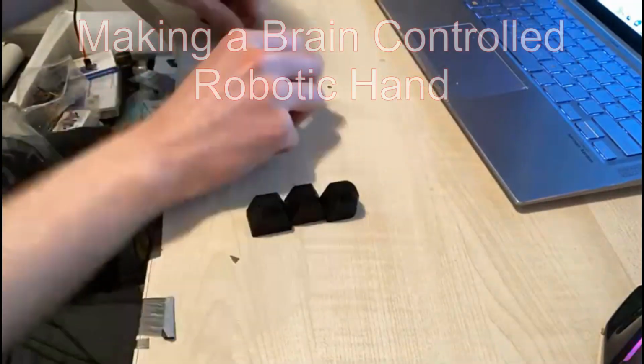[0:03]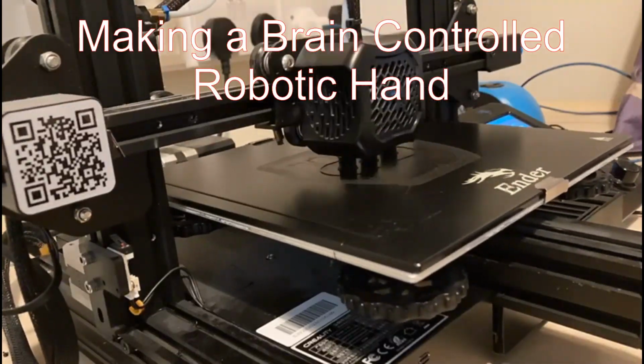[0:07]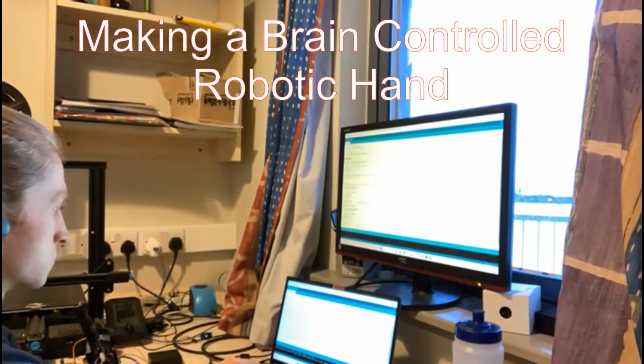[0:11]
I have a hand. Actually, I have two hands. And if you are like me, then you probably also have two hands. Thing is, there's people who don't have two hands, and some people want to replace their hands because they have fingernails that look like these.
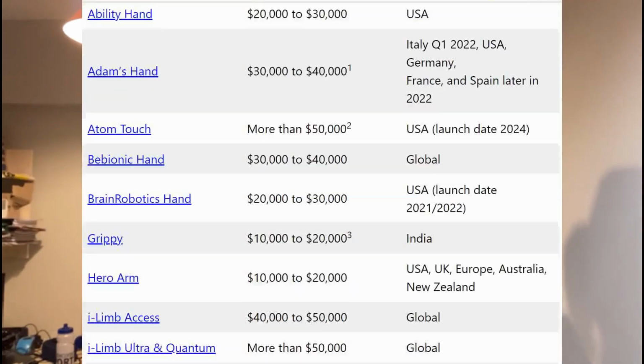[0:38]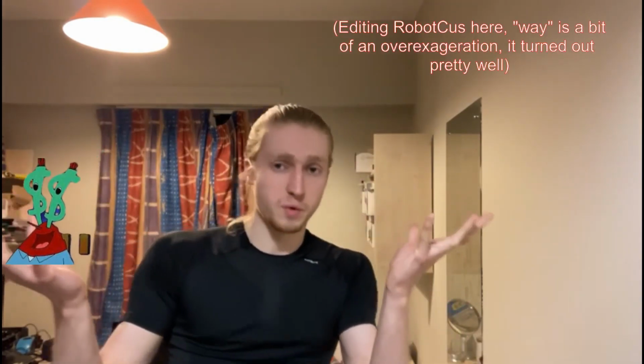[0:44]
Thing is, you better be Bill Gates if you want an active prosthetic, because these things are expensive. I think I can make one that is way cheaper, but also way worse.
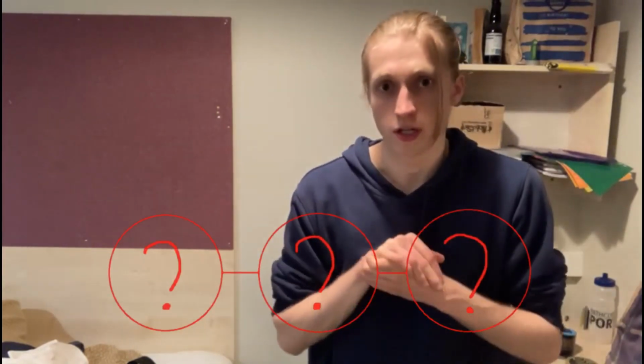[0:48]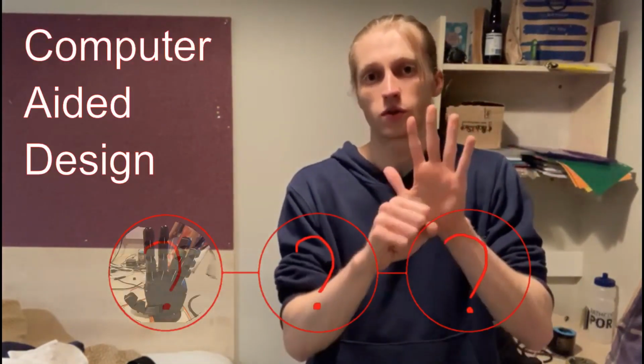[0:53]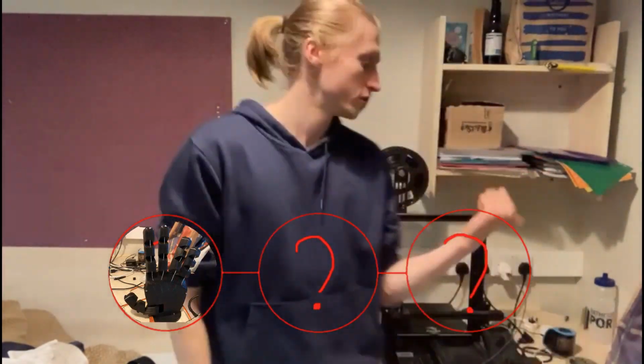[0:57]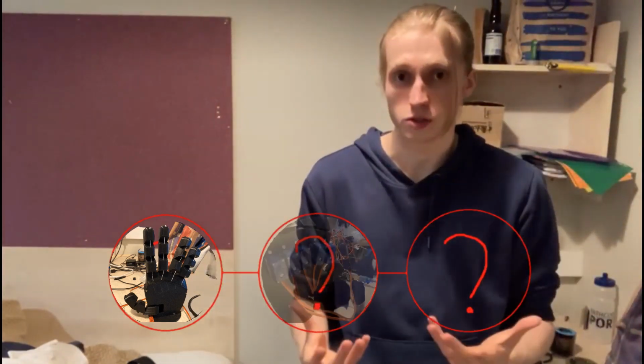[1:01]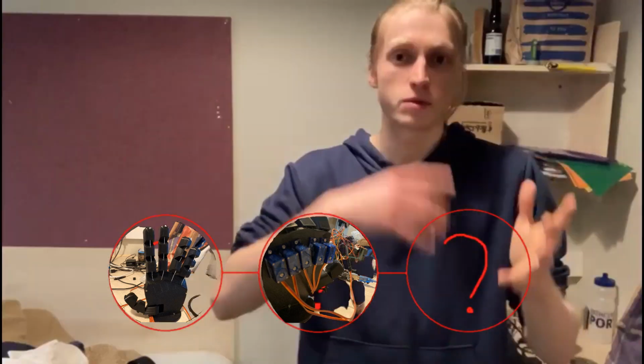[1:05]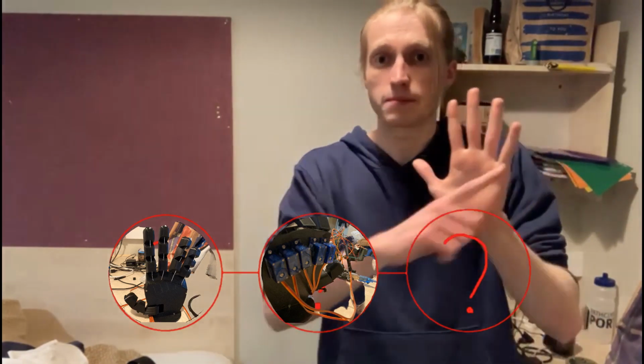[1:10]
Here's my plan. There's three main components that are going to go into making this hand. The first of which is the computer-aided design, or the CAD of the hand. That will be creating the actual body of the hand, and I'm going to use 3D printing to do that. The second bit is the motor and control system. I'm going to control the movement of the fingers and the thumb using some sort of motor that's going to sit hopefully in the palm. That might be a little bit tight for space, but we'll see what comes out of the design.
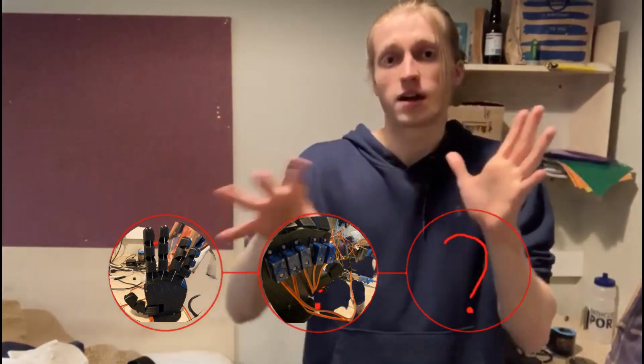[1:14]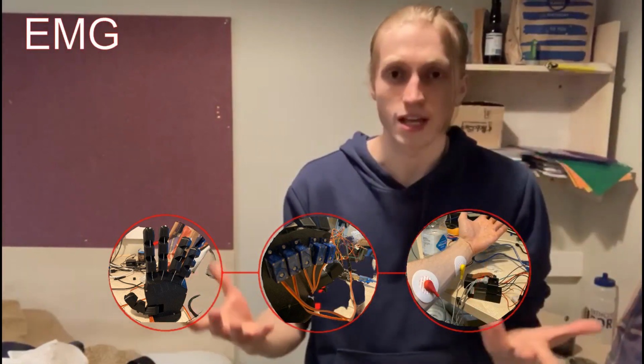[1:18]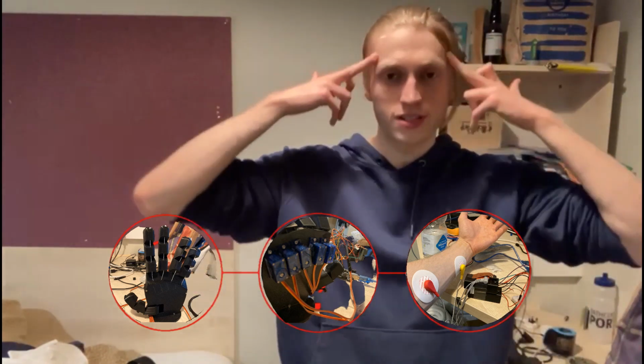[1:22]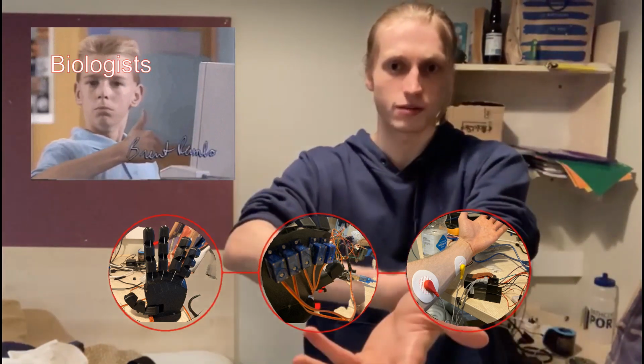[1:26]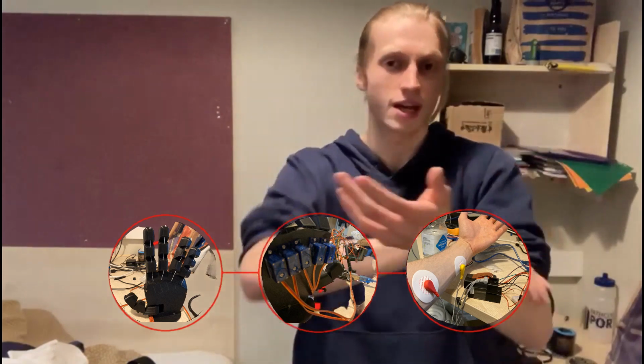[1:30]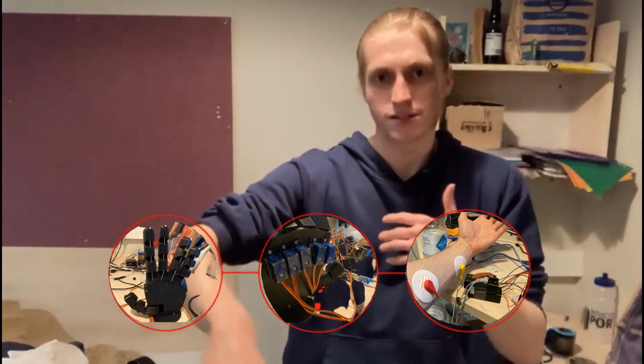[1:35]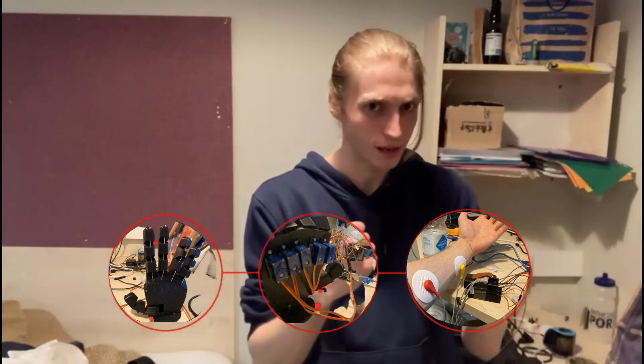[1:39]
And then finally, I'm going to create an electromyography sensor, or EMG sensor for short. Essentially, the brain is going to send electrical pulses down into your muscles, and on the surface of the skin, I'm going to detect a potential difference. Then I'm going to amplify that signal, and that way I can characterize what action the person is trying to make and make the hand do the same thing.
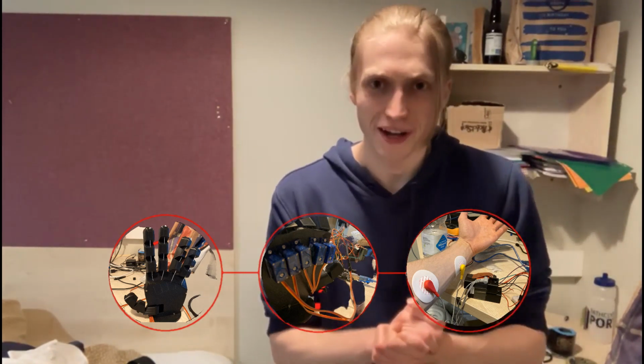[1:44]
I've given myself a month for that. Yeah, I'll try.
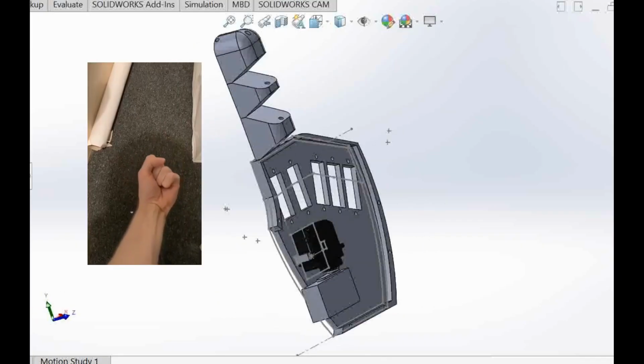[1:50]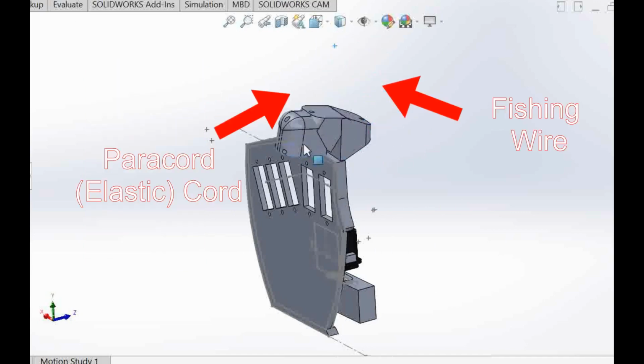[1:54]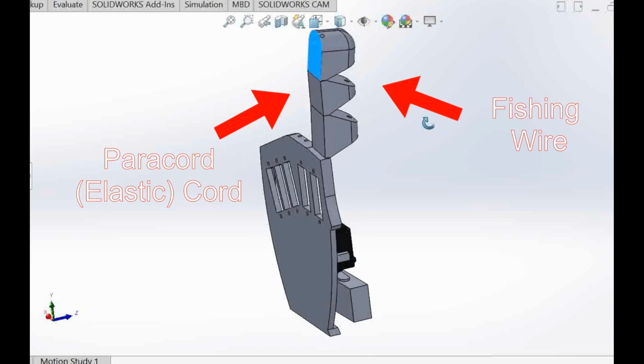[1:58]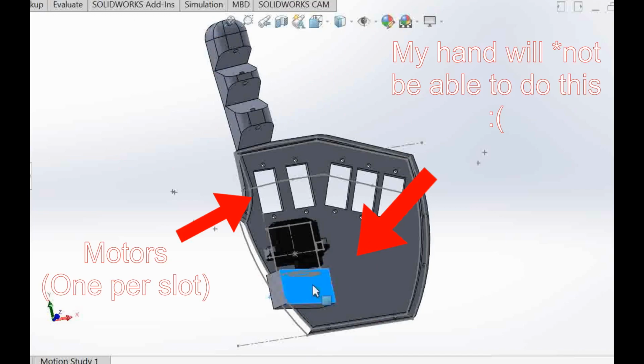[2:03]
In a real hand, muscles pull tendons. To replicate this, I will use fishing wire and elastic cord that runs along these parts of the fingers. Motors will sit in this part of the hand. Each finger will have a respective motor.
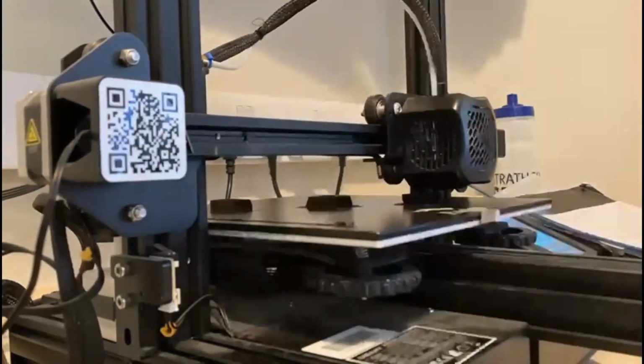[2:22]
So with the design in a pretty good place now, I just want to quickly test if my whole idea with the power cord and pulling the actual fishing wire with the finger is going to work. So I'm going to print off the thumb, as you can probably hear my 3D printer is on, and yeah, let's go, good luck. I don't think you have any idea how fast I really am.
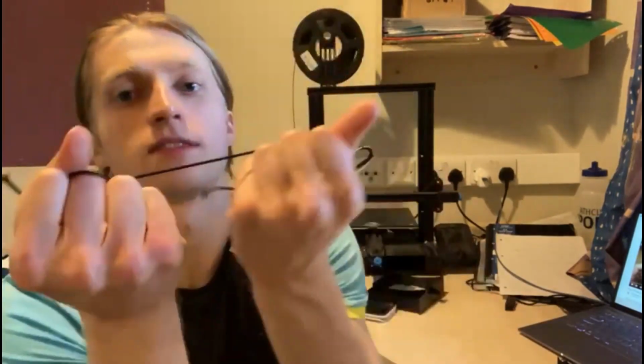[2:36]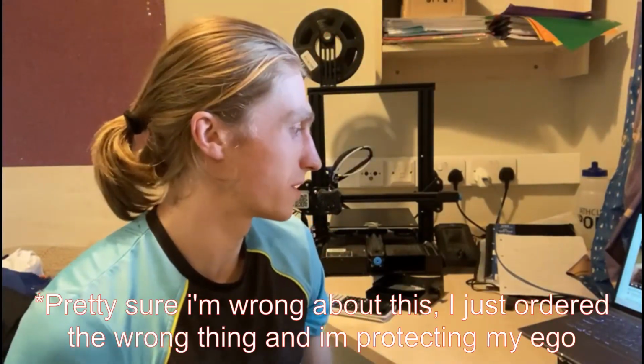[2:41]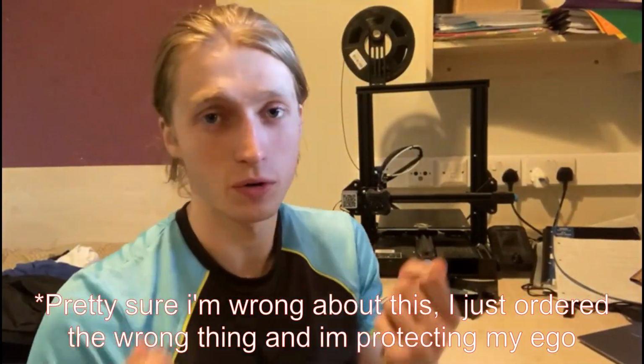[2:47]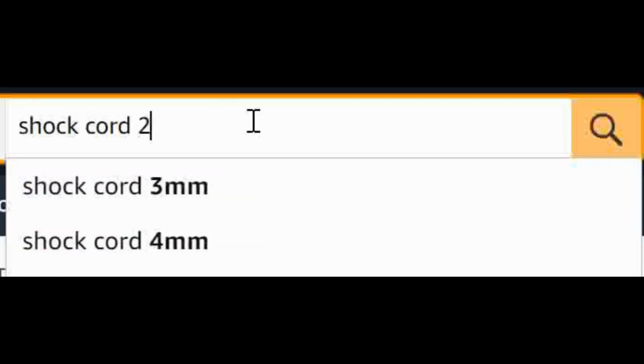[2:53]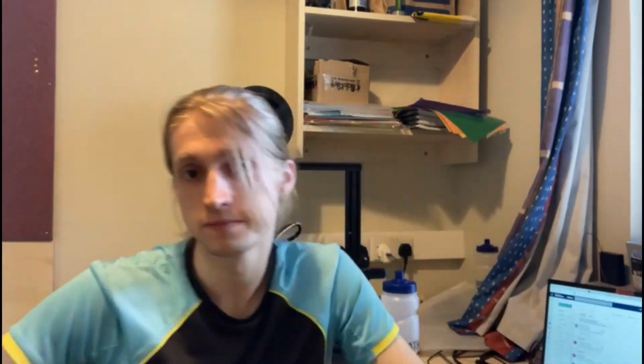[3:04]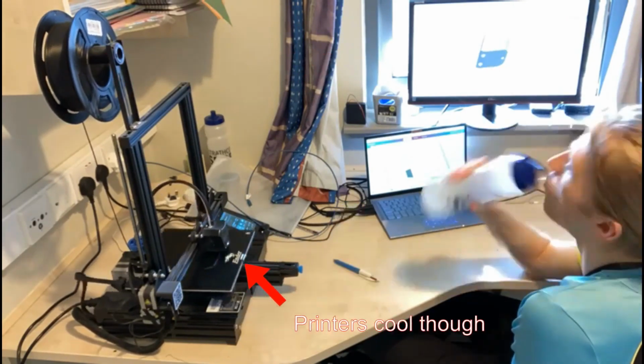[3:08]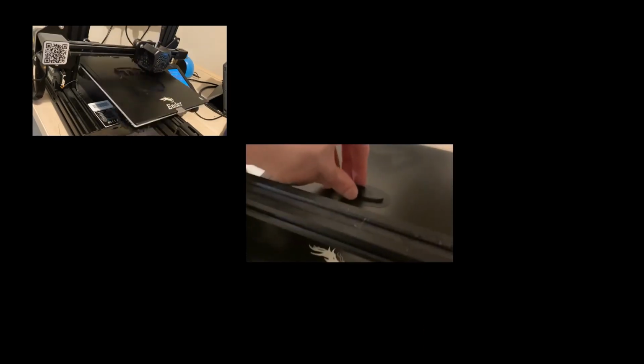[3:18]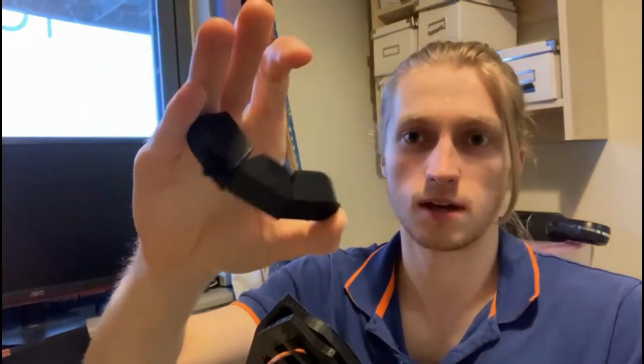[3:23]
So with those 3D prints done, the fingers are looking really good. I'm getting that snapback from the shock cord, which is what I was looking for. But the palm's going to need a slight reprint.
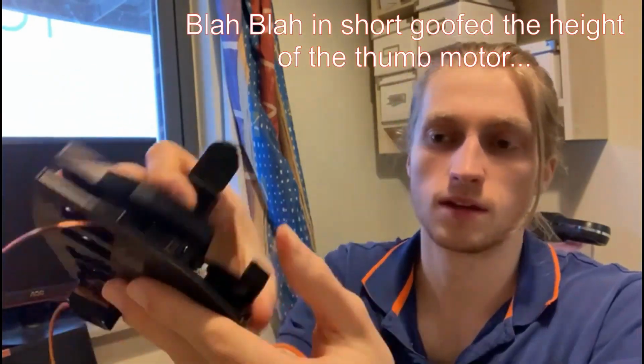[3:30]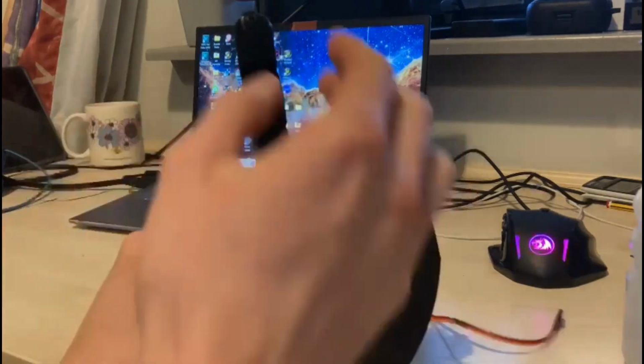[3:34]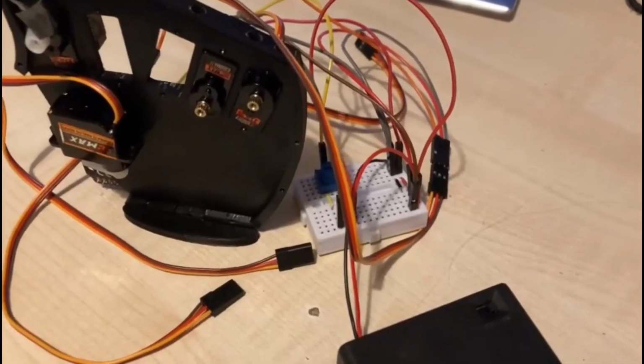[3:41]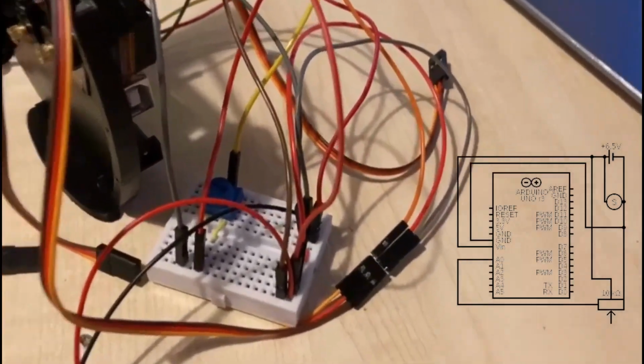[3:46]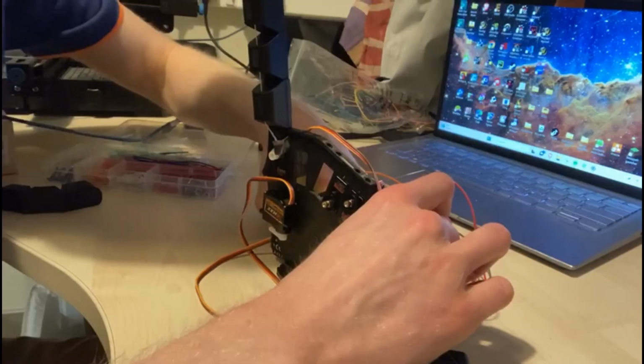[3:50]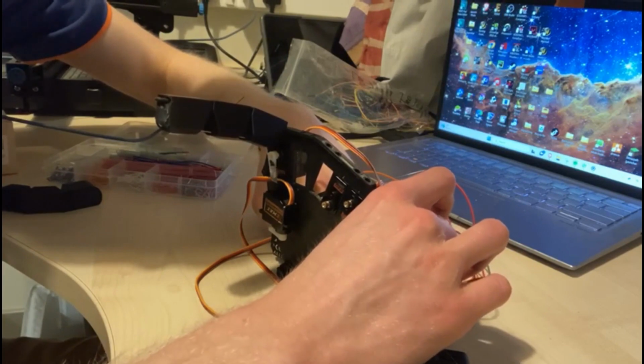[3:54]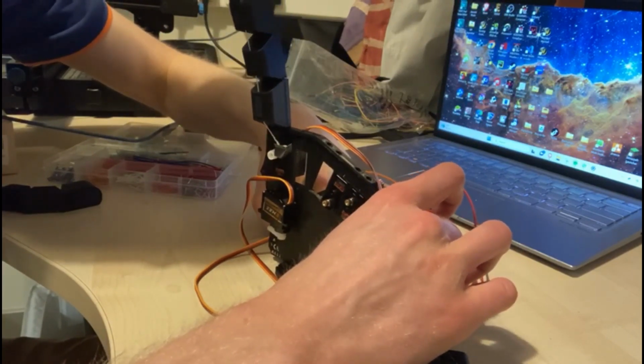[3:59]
With the CAD of the hand in a good place, I can start with the circuit work. I've started off by making this potentiometer circuit, which allows me to move the servo motors as I please. The servos I'm using are these 180 degree rotation ones, which I wrongly assumed would give me enough range of motion for the fingers. So I'm going to have to source some continuous rotation servo motors and revisit the CAD of the hand a little bit.
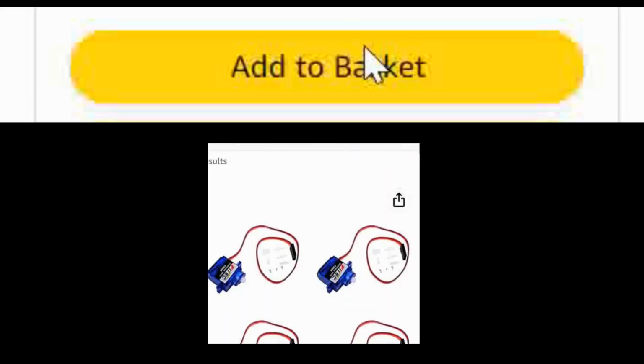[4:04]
Leave me alone! The use of continuous rotation servos highlights the issue of object detection.
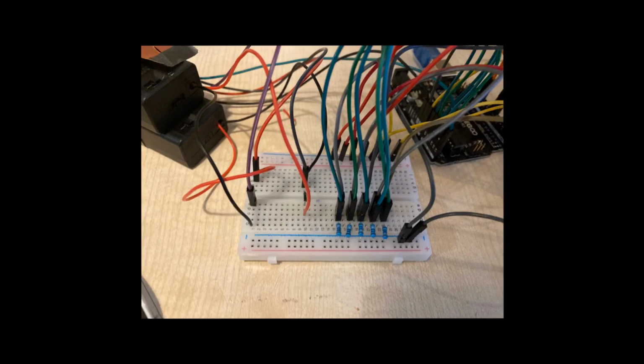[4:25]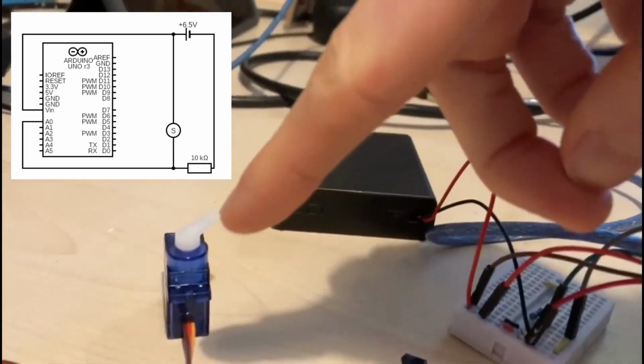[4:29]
How does my hand know the difference between these two objects? One has a larger circumference, so subsequently the way that the hand grips it is going to be different. I'm going to solve that issue of object detection using circuitry, this circuit. By using a shunt resistor, I can measure the current that goes across this servo here.
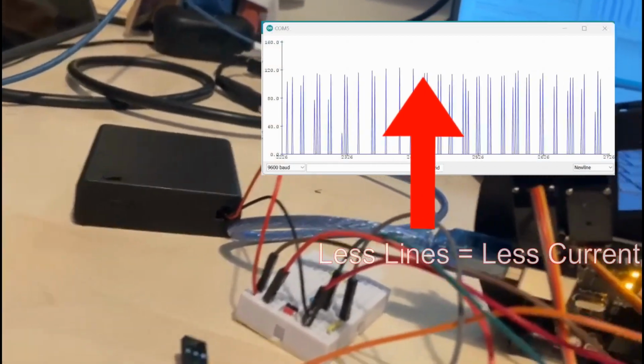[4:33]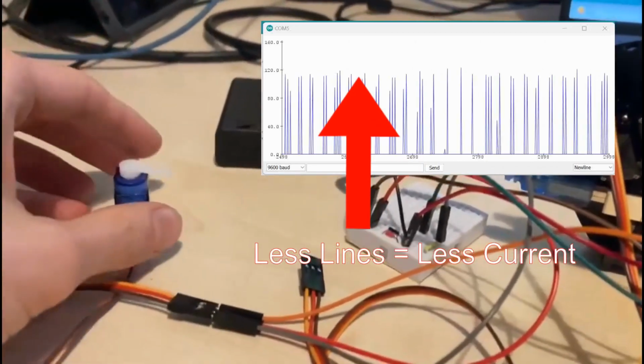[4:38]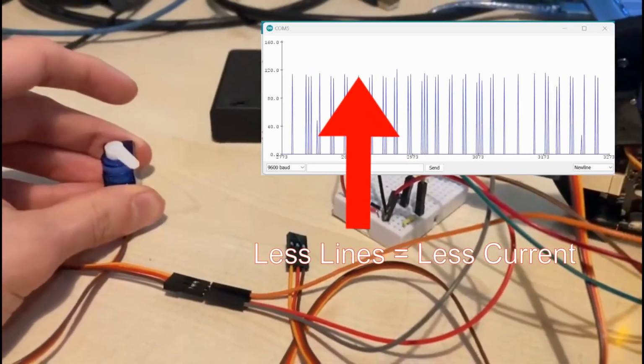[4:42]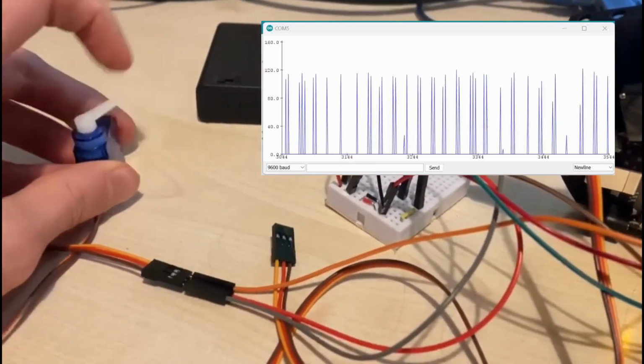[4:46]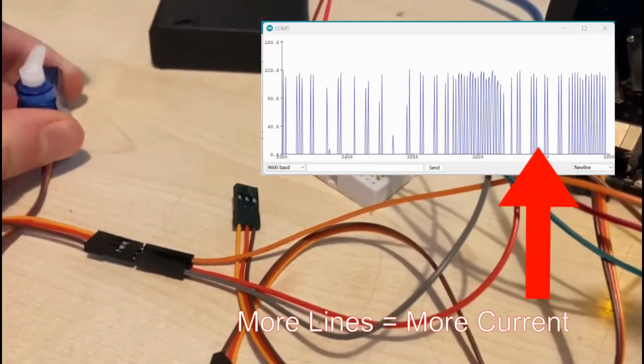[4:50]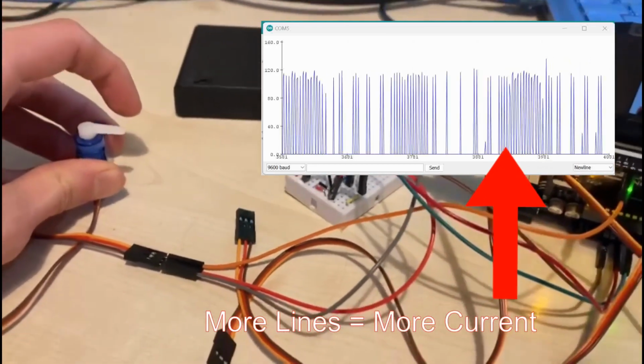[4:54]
So what you can see is there's this generic sort of behavior when the servo is unloaded, and when the servo starts to experience resistance, i.e. when the fingers would be either fully closed or fully open, you'll start to see a change in the characteristics of that line. What I can do is I can pick that up in software and actually filter that out.
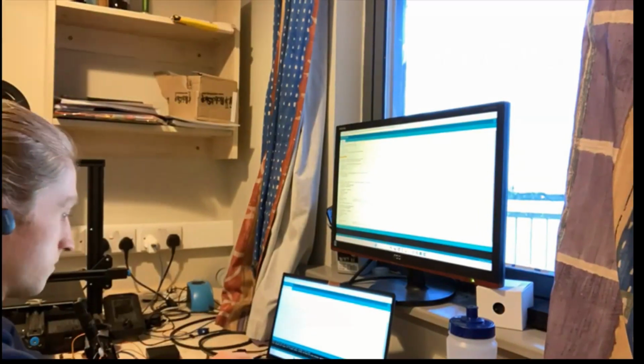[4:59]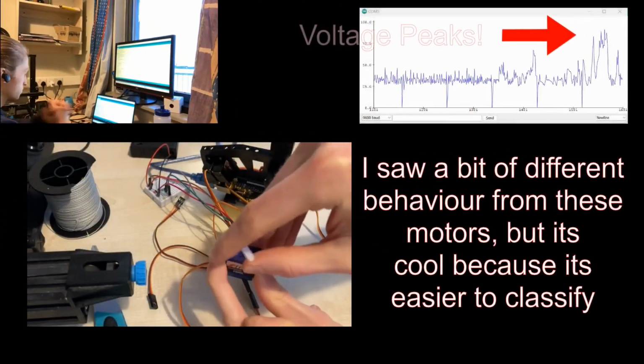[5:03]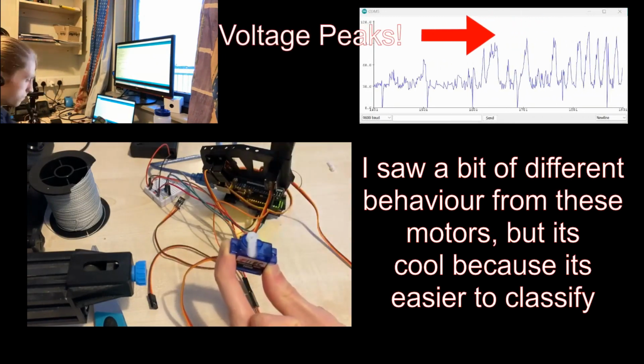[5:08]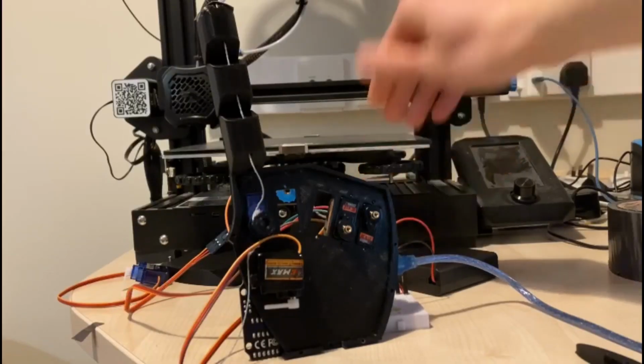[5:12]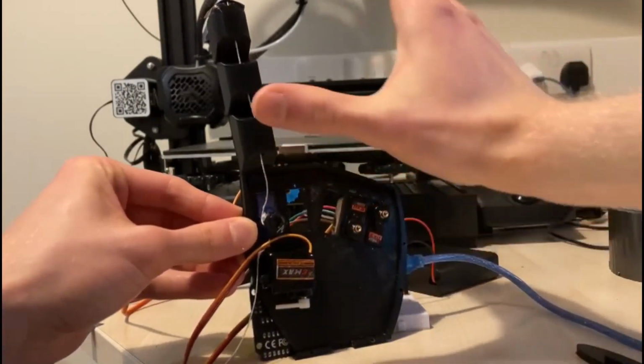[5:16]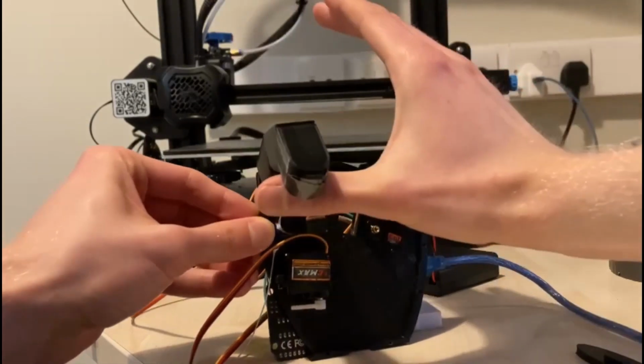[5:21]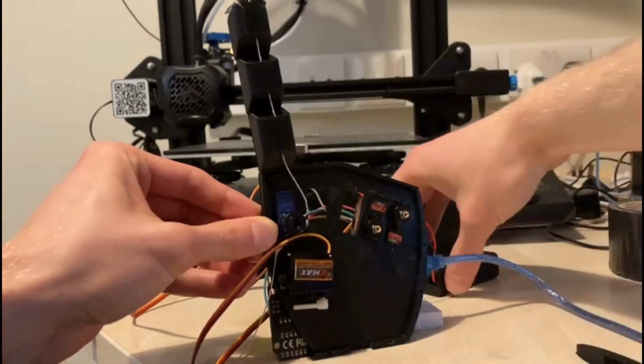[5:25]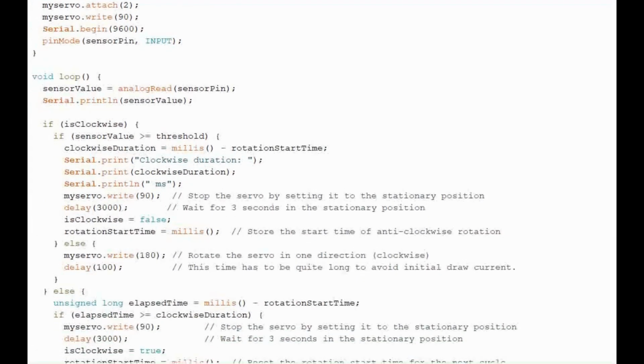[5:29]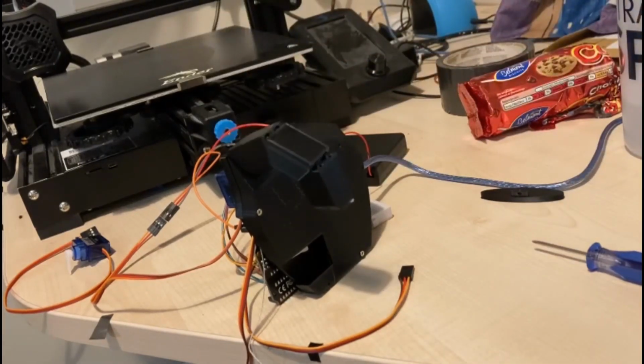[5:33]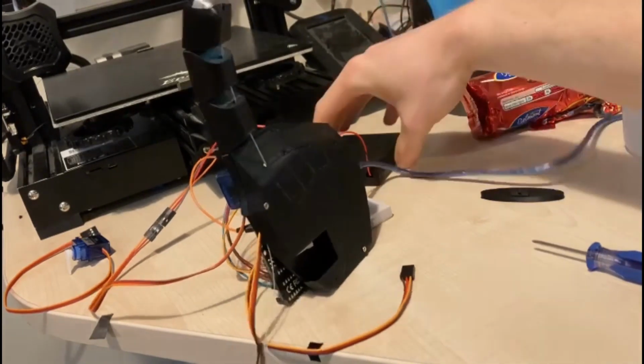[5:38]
Through much CAD, coding and sweat, I've managed to get the motors working as they need to be. Since every object that is gripped is different, the time for which the servos have to rotate has to be different for each finger. I had to somehow keep track of the time of rotation as opposed to the position of the rotation, which was not fun, to say the least. The good thing is, this can now be scaled up to the whole design, so cue the montage.
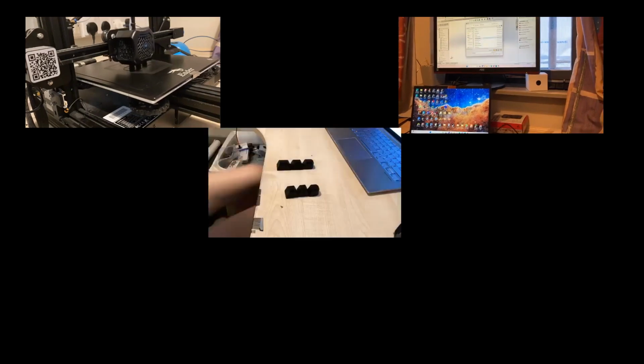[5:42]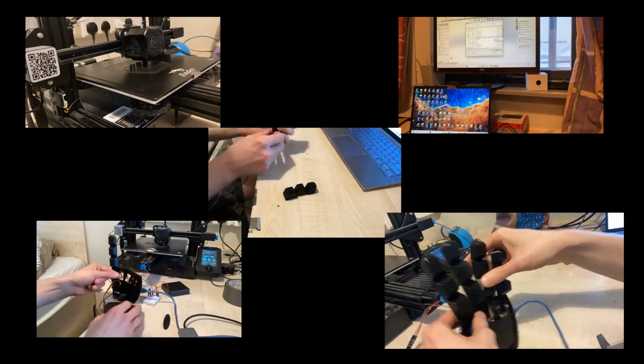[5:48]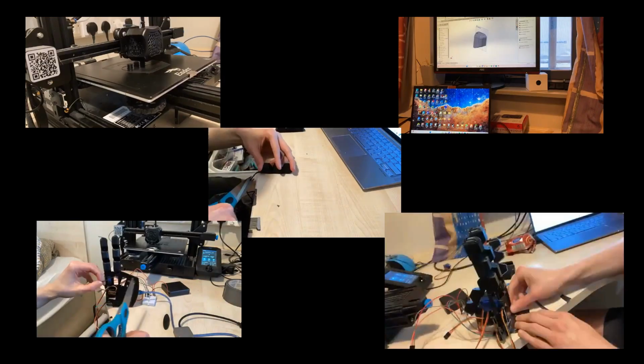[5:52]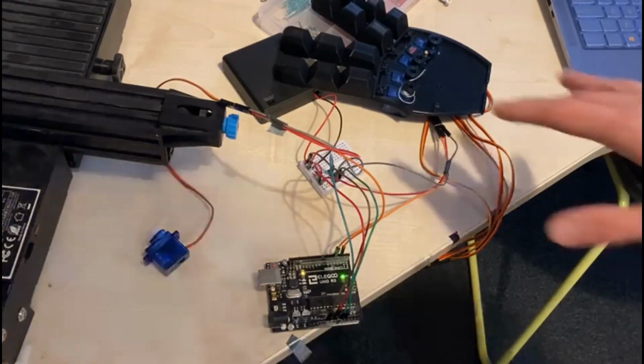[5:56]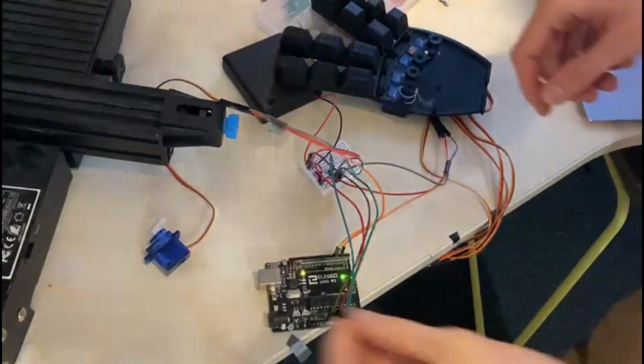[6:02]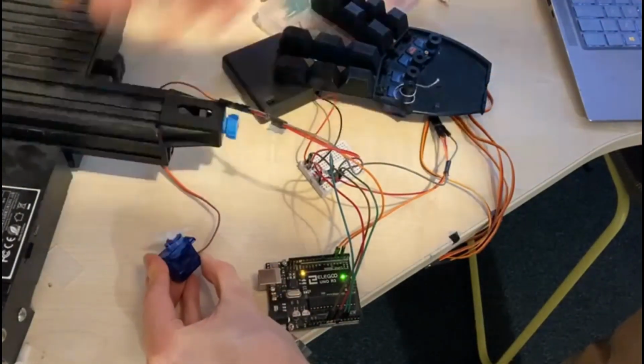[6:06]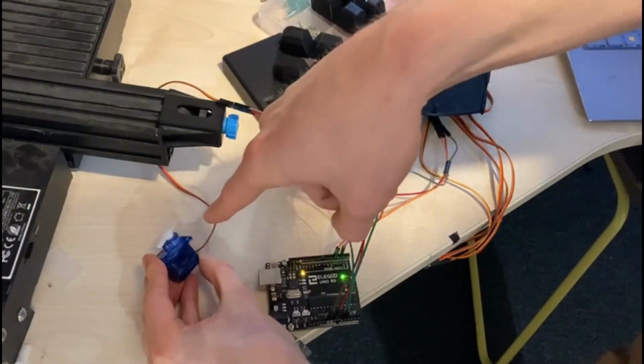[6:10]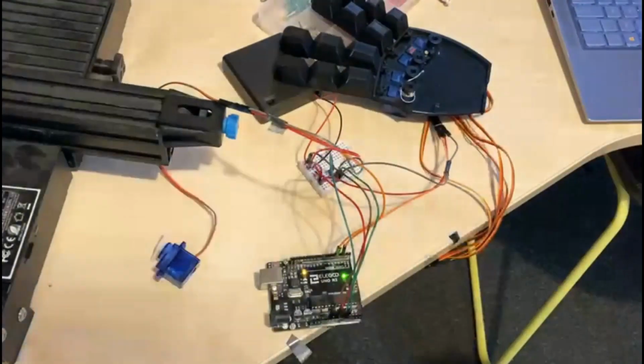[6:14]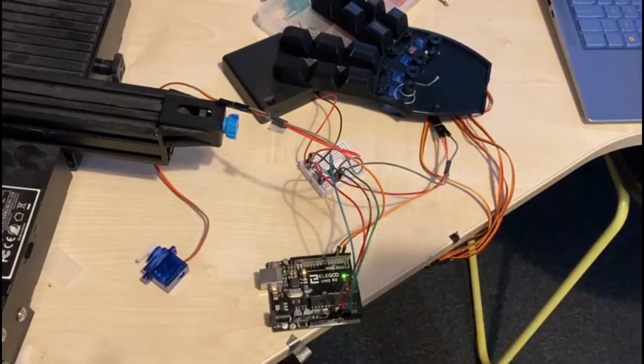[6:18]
So I'm making steady progress with the scaling up of the system. I've managed to get the code working so that each motor acts independently of the other. So if you see, if I go and I stop this one, if you imagine it's like controlling a finger, this one is still doing its own thing, and this thing does its own thing as well. So they're working independently of each other, which is sort of what I want. I'll probably do some changes to the code to get it working the exact way I want, but it's going well.
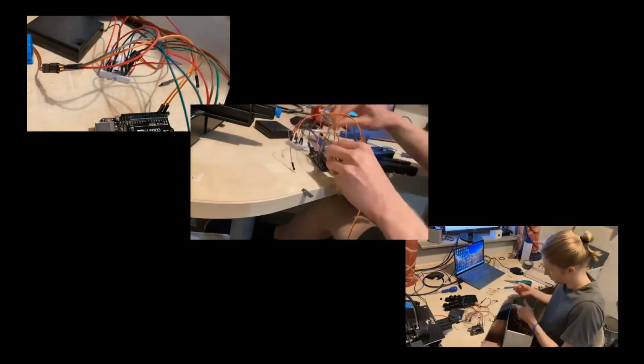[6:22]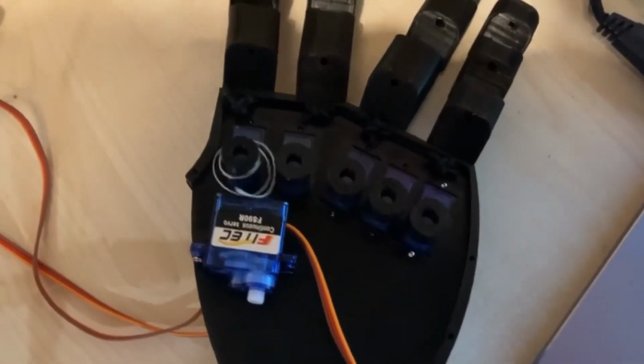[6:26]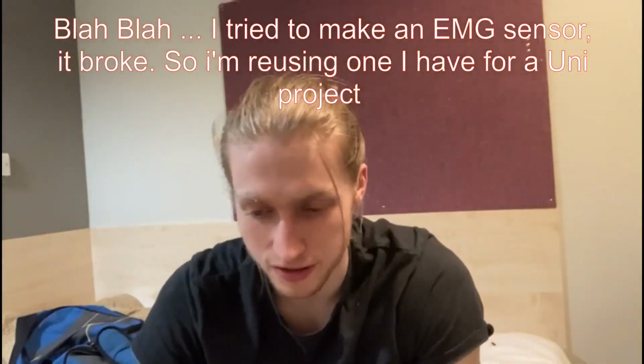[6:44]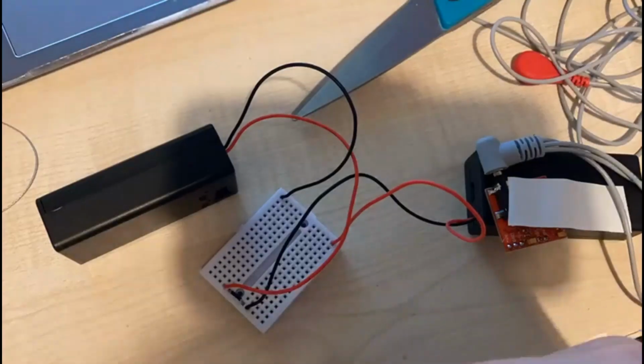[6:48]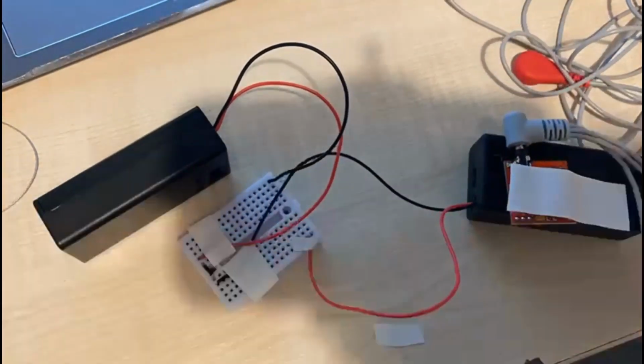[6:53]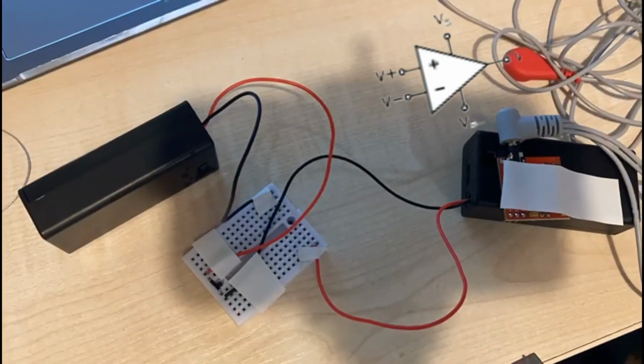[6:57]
My masterpiece. That's all the motors working now, and what is that? I made all this theory. I researched a crap ton about electromyography sensors. EMG sensors need a dual power supply. That means a positive input and a negative input because they rely on operational amplifiers. I created this using 2 9-volt batteries.
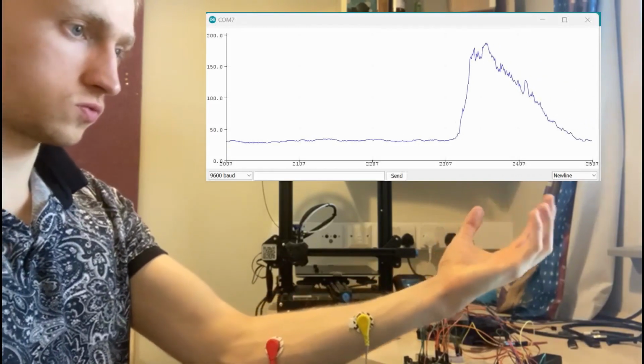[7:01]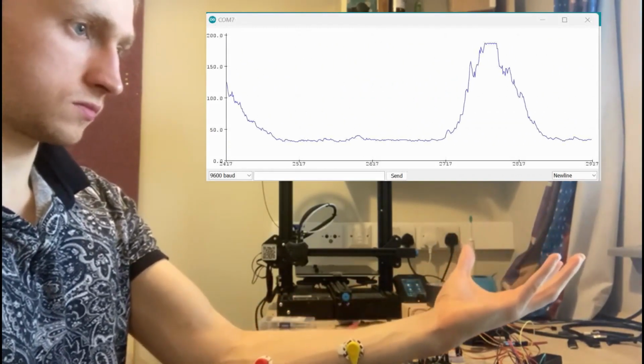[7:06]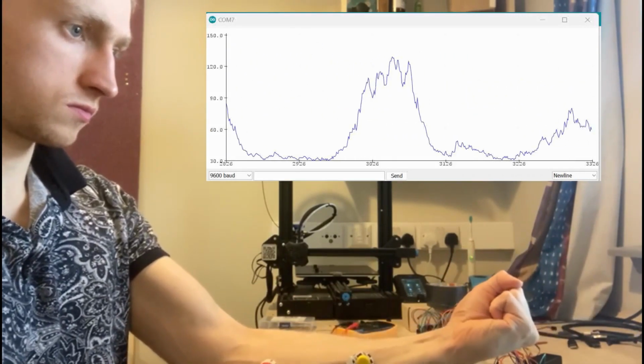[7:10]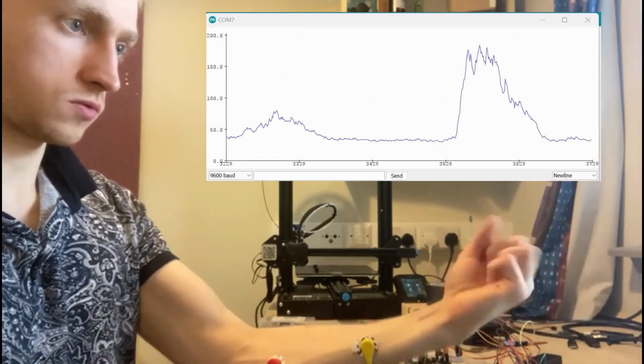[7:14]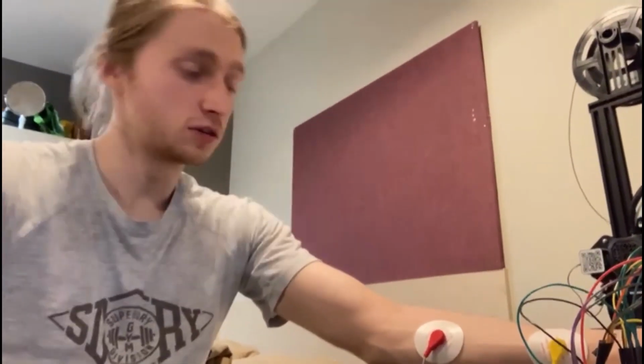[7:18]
I was able to write some code to interpret the electrical signal that was being received from the EMG sensor. There's a voltage spike that I can record when I tense my muscles. The intensity of that depends on how tightly I tense. From here, I can use a very basic classification code to distinguish when I've closed my fist and move motors. So I'm finally at the point where I can take a signal from my arm and put it to the hand and actually move the motor as I want it to move.
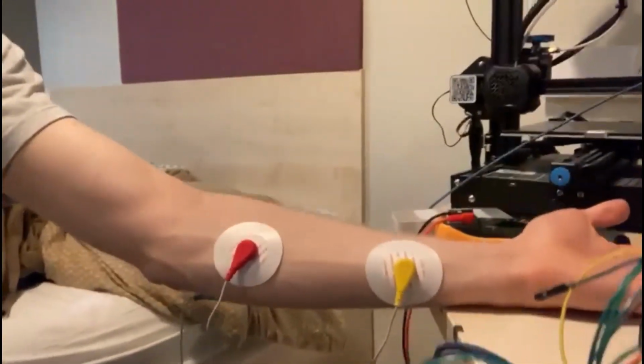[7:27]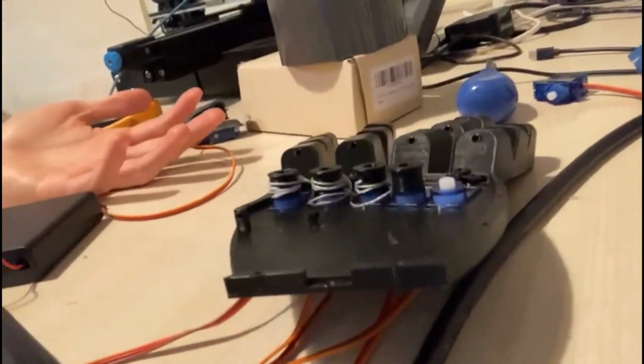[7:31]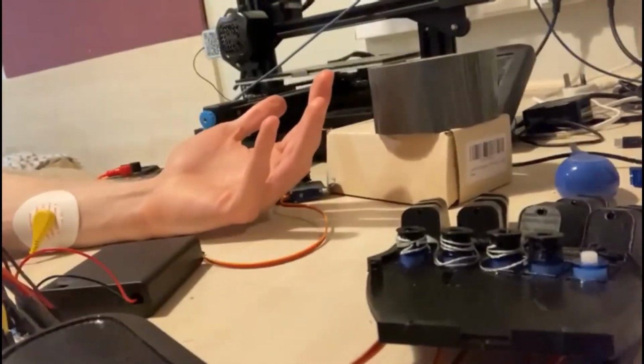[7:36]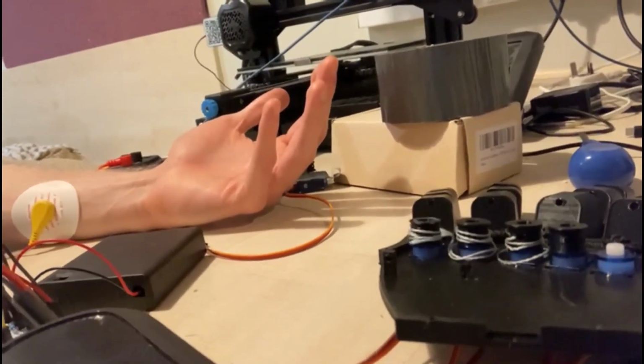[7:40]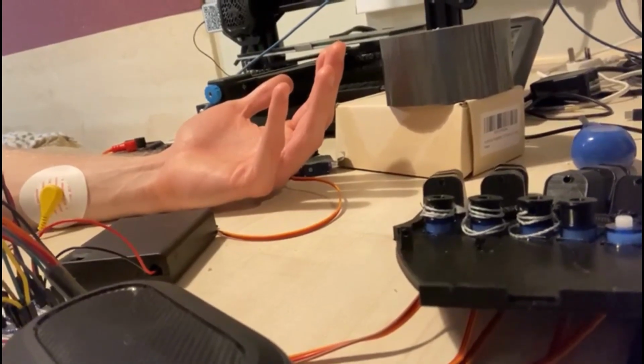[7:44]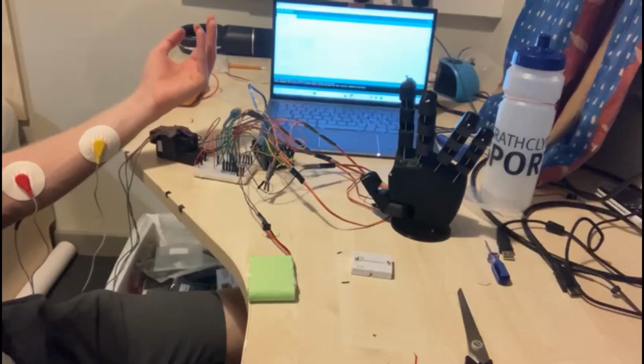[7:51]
So here we go. Turn the motor on. You can hear the motor starts going, and then it needs to be stopped, it needs to be a counterbalance. Then it will pause for 3 seconds and it will go the other way for the same amount of time. And then it pauses and it just waits. Yay! I scaled that logic up to all motors and it worked. Psych! Freedom!
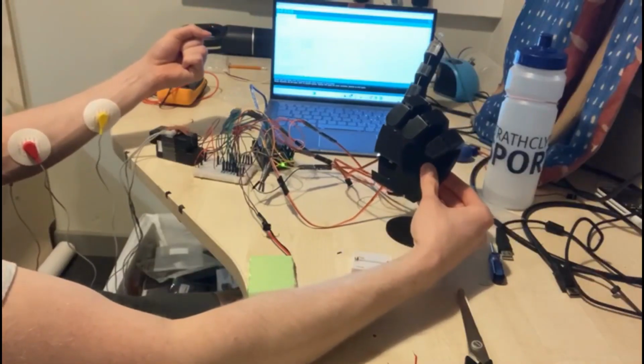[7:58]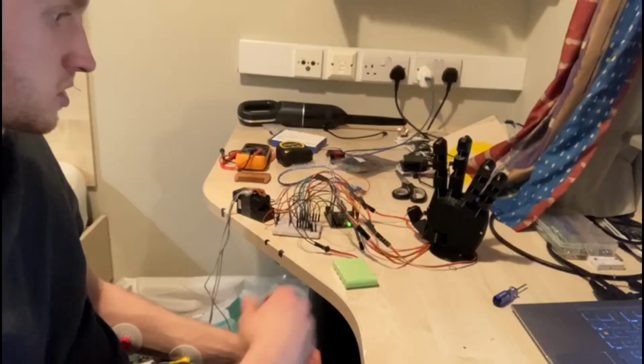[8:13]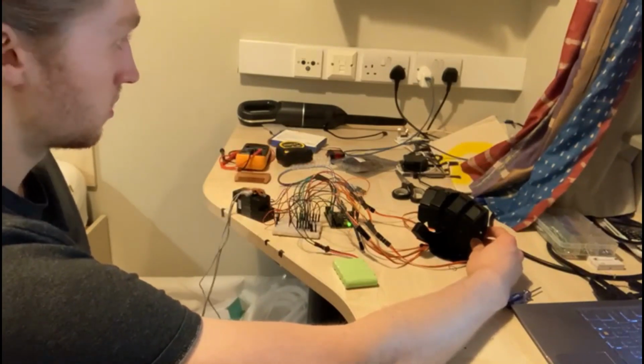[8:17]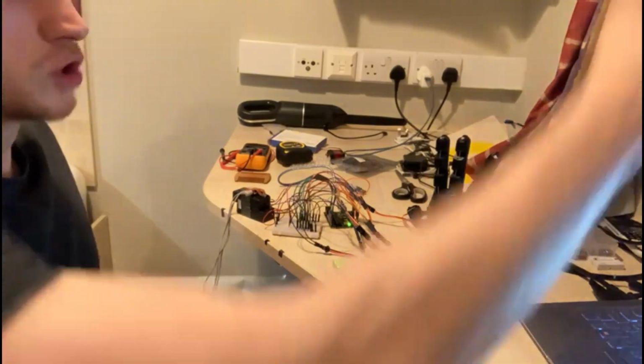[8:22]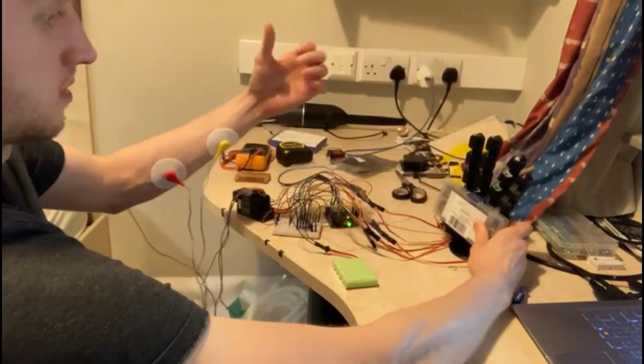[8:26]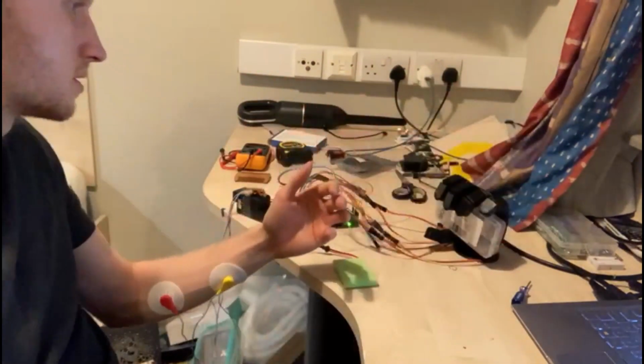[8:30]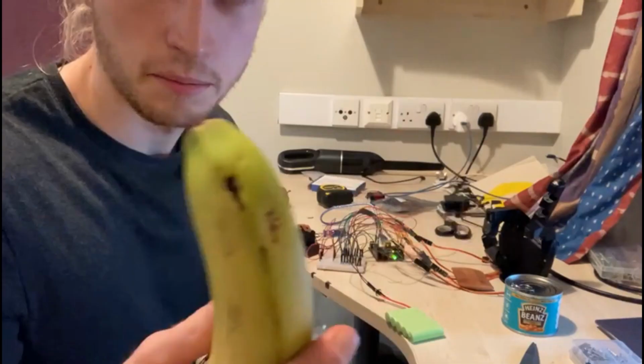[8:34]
Oh. I kept on having a problem with the thumb, or in other words, it was just designed badly. So after making some design changes... Now let's just see what happens. I'll part the plan. Okay, hands off. Too easy! It's too easy! Banana!
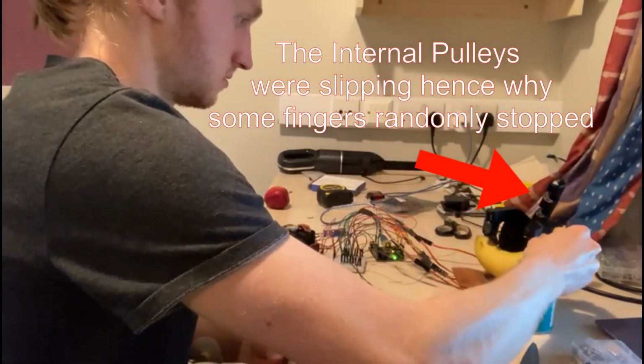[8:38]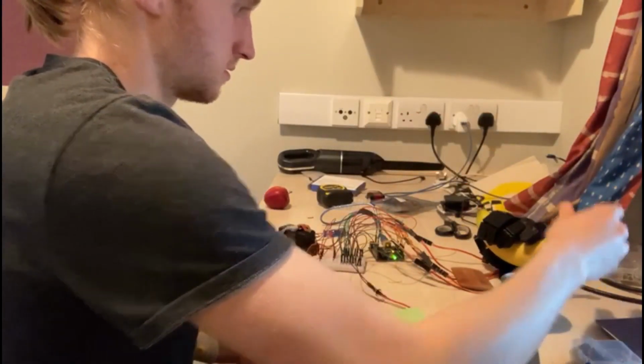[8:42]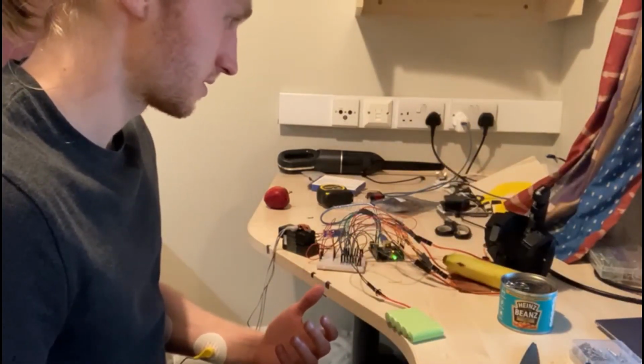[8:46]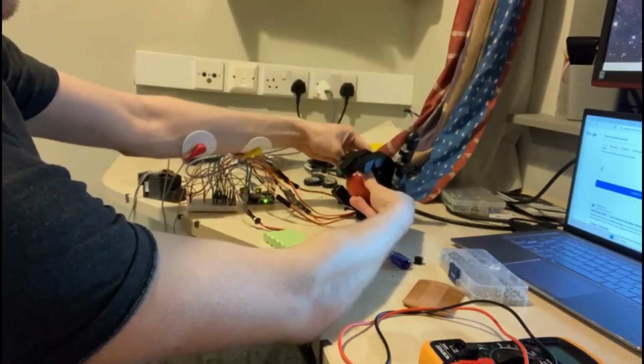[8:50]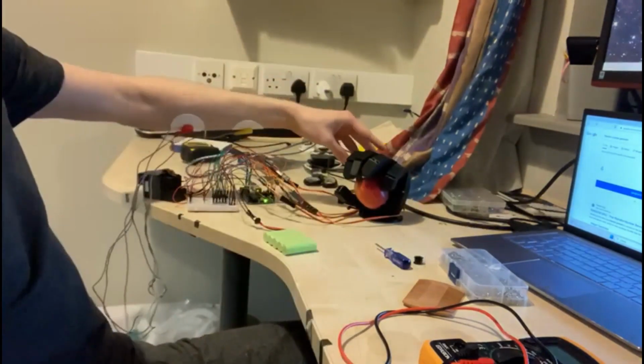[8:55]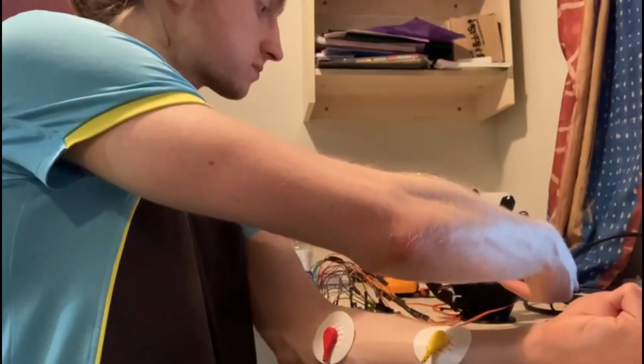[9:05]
Perfect. What's the thumb doing? Lovely. Apple. Okay, there we go. Come on down, boy. Ooh. It's kind of gripping it. What's up, yeah? Wow. It's so gripped. What the... After fixing the pulleys, now we can do the final test of a waffle cone.
Success! Very nice. Well, that's it.